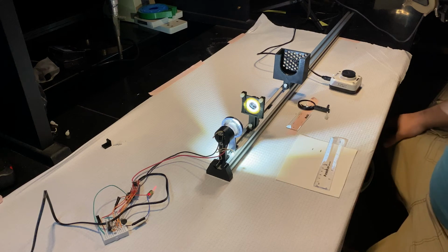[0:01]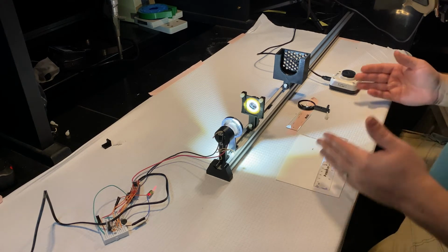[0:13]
Okay, welcome back everyone. We are now going to do lab 4, which is calibrating magnification with digital microscopy. So the first thing that we're going to be doing, same thing we've been doing with the previous labs, is making sure we have our light source and a nice collimating lens to illuminate any sample that we mount relatively close to it nice and evenly.
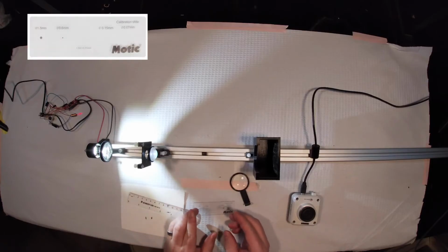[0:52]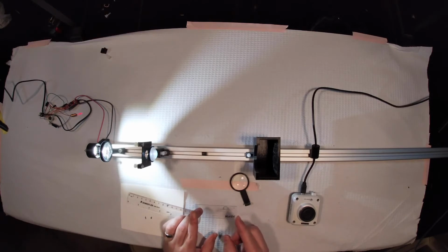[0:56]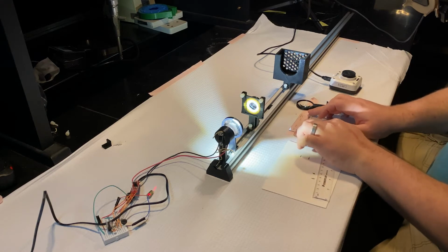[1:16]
We're going to be using the same objective as last time, this nice 20x objective. And for our tube lens, we're going to be using this tube lens labeled 4x. Now, you should have the focal length of that from a previous lab, so be sure to reference that. And we're actually going to be doing away with our trusty ruler for a much more precise slide with very precisely engineered dot sizes on it, so that we're not simply measuring the distance between markings on a piece of paper that I made with my very shaky hands, but actually a very precisely engraved sized spot, and using that to calibrate magnification and also calibrating it digitally.
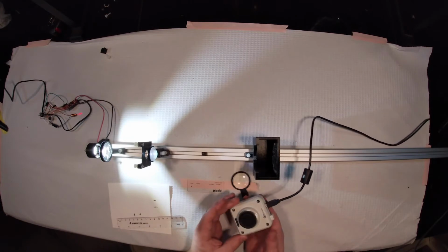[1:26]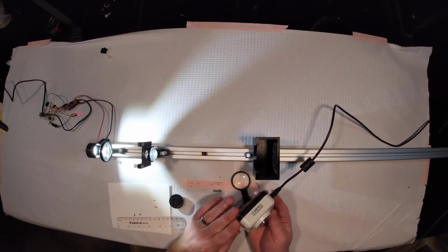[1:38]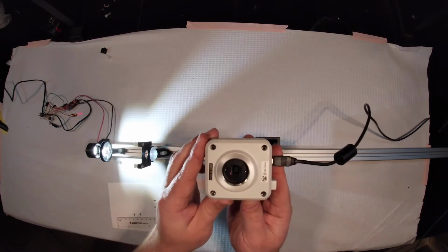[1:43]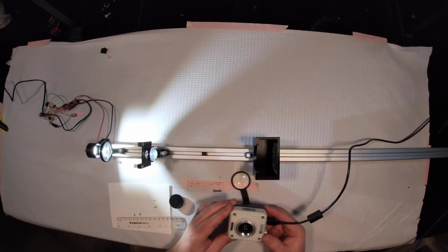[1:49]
So what we have here is a camera that you can mount on your scope. Now, this is probably unlike most cameras that you've seen, because this camera, in fact, has no lens attached to it, right? This is simply an array of pixels. And you might even be able to catch that right in the center. You can see sort of a square array. Now, this camera has 1960 by 1280 pixels, and each pixel is 2.8 microns on each side.
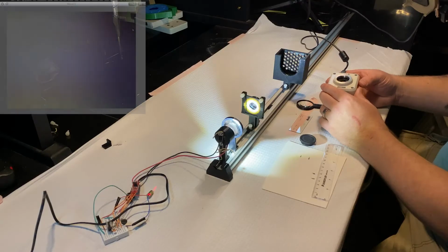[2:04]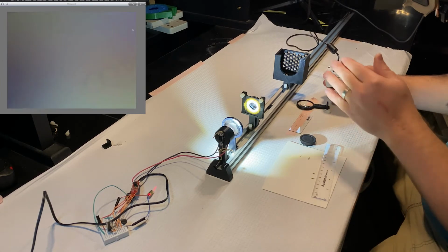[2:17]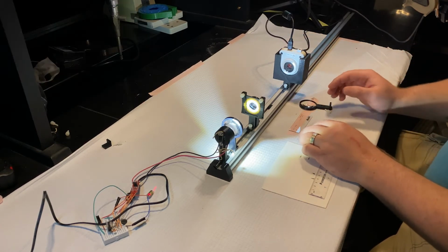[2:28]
And what you're seeing on the feed is nothing but sort of bright spots and dark spots, because again, there is no lens on here, so there is no image being formed. But our microscope is going to serve as our lens. So we're going to go ahead and insert that into our holder. And once we start placing things in our sample plane and making a nice infinity corrected microscope, we should start to be able to see something on our camera. But we'll get back to that in a minute.
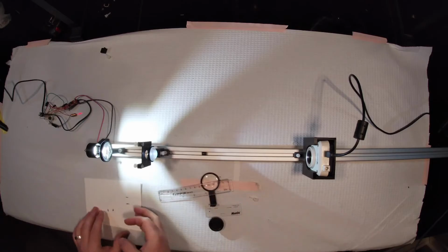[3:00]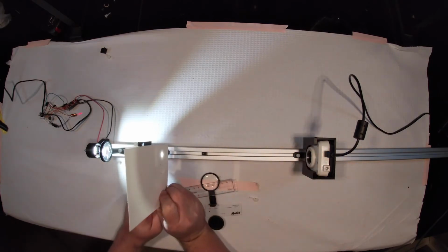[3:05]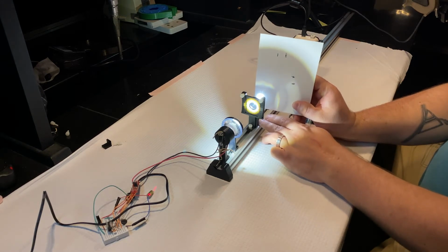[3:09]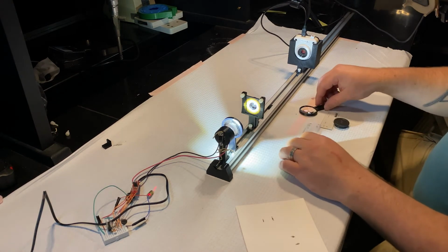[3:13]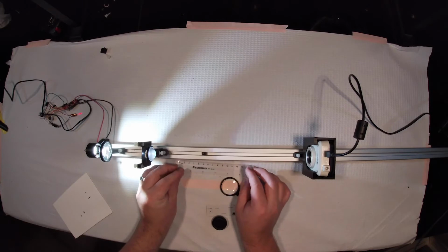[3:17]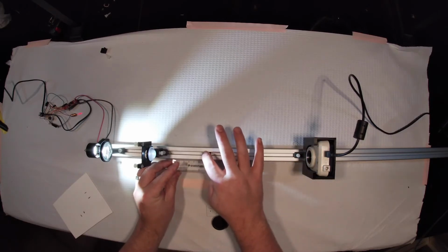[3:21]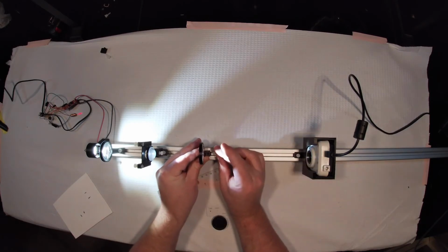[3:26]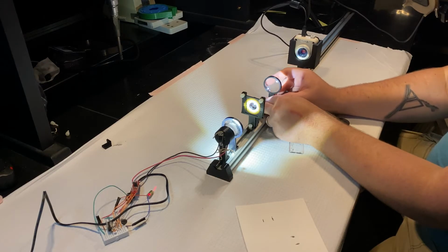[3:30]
So we'll do this exactly the same way that we did in the first part of lab 3. We are going to mount our tube lens one focal length away from the back focal plane of our detection objective. So our detection objective, again, its back focal plane's about there, and it's probably going to have to be a little bit closer to our sample. So we're going to do some quick back of the envelope calculations here. This needs to be about there. So I'll go ahead and screw my tube lens in. Too tight. We'll need to move it around later.
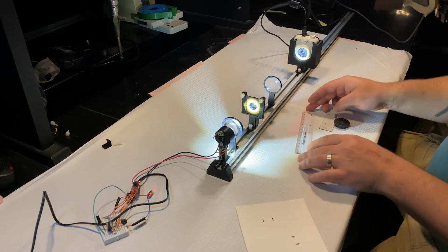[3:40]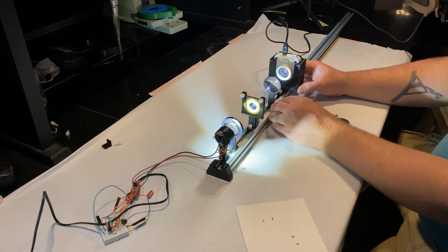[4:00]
And then we know that we should be getting an image one focal length away from our tube lens. So that image plane should be somewhere around there. Now you want to make sure that you have aligned your camera pixels to where you think the image plane is going to be, and not just the front of the camera, because the camera pixels are actually inside of it. Now, let's go ahead and mount our Maddox slide.
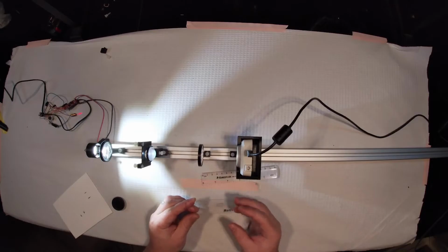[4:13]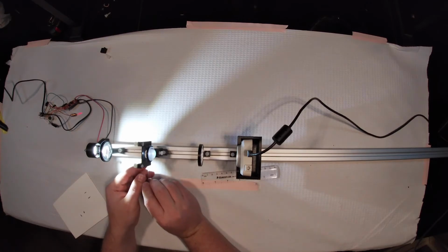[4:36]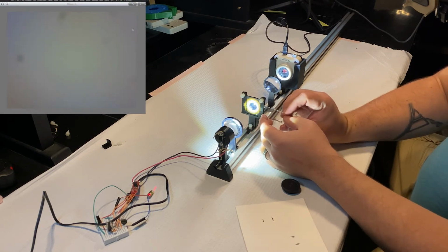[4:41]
Now, there are several different sizes of spots on here, all the way from a diameter of 1.5 millimeters to 0.6 to 0.15 to 0.07. So we're going to need to pick the best one, and without doing any calculations, let's just go for the biggest one right now, and we'll see how that looks. All right, so we're going to mount this guy in the middle of our field of view.
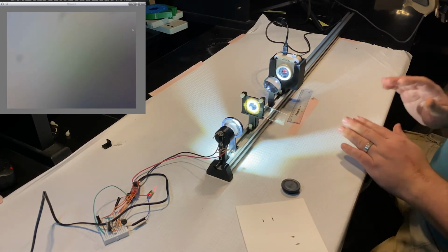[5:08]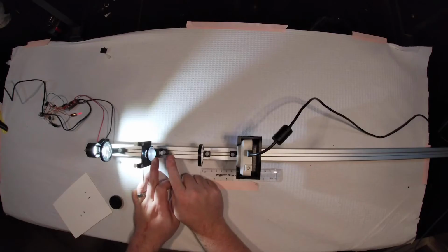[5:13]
And if you look at the camera feed, we're seeing something as I move this around. Move it up, move it down, seeing some black smudge, which is promising. We just haven't quite properly aligned our system yet. I'm just going to leave that there for right now, and we're going to make some adjustments. So we're going to need to make sure, first of all, that our sample is one focal length away from our lens. And actually, I think that I have mounted this backwards.
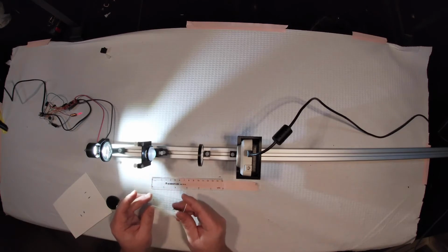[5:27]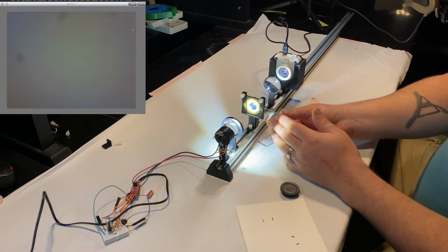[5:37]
Yeah, you want to make sure that you place the etched side closer to the lens. That way you're not looking at light as it passes through the thick slide. So we get that smudge somewhat back into view. Yeah, there we go.
Now, you're dealing with a very small array of pixels. It's only sampling a very small subset of your field of view. That's why I started with the biggest dot, because it's the easiest to find. Very unlikely to skip past it.
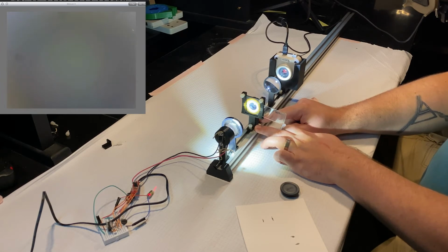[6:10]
Now, I'm going to move my detection objective back and forth a little bit, just to see if I can find a nicer focal plane. Definitely improved on it. You can see these edges, it's looking a little bit sharper. Let's see if we can do a little bit better with that. All right, that's not looking too bad. Oh, yeah, and there we go. Nice crisp edge to our dot.
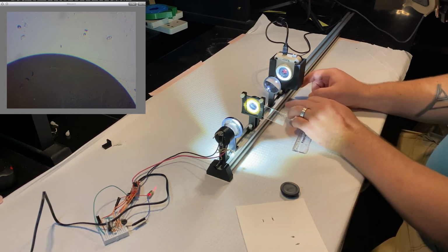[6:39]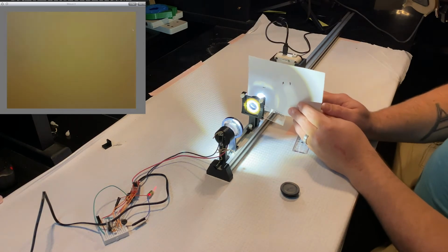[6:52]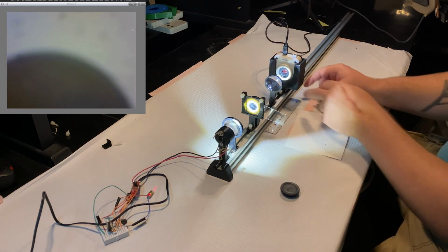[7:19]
Now, I'm also going to move my image plane around a little bit. I'm going to make sure that my tube lens is still the proper distance away from my detection objective. Not quite, because I had to move it back a little bit. So I'm going to need to move my tube lens up a little bit. It's going to throw my image plane out of focus for sure. I'm going to need to move that back a bit as well.
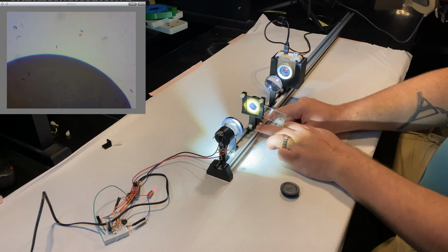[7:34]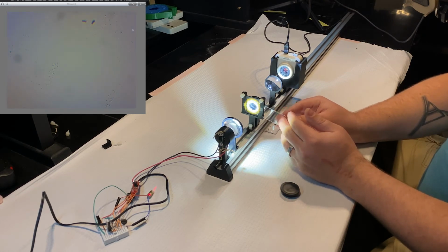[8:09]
And tweak my focal plane a little bit. That's too far. See that even very small movements drastically shift your focal plane. Oh, and I bumped my sample a bit. So I'm right in the middle of the dot right now. So the first thing that we'll notice is that this dot is very large, and I would say that this is probably a bit too large for our field of view, because I can't fit the entire dot in it.
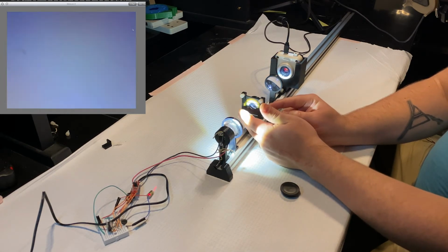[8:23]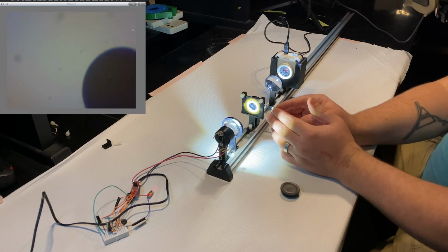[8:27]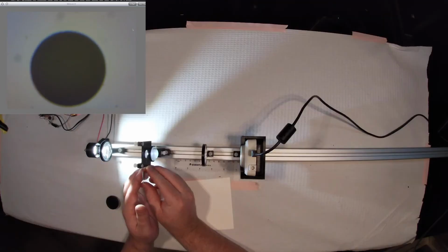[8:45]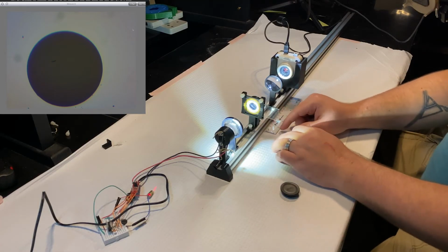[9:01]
So what I'm going to do is, let's go to the next dot size over, see how that looks on our image plane. Well, that doesn't look too bad. Lost it. All right, and I appear to have shifted my focal point ever so slightly, so I'm going to make sure I refocus this so I get the sharpest edge possible. That looks pretty sharp to me. And that seems to be a pretty large dot without completely filling my field of view.
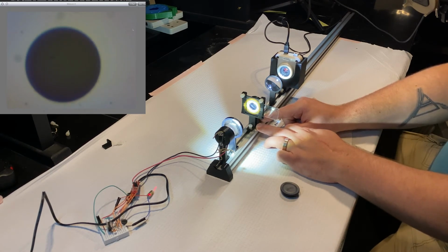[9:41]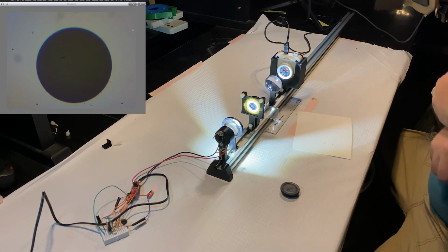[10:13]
I'm going to try to see if I can get it closer to the center. Leave it there. It's pretty close. Now, refocus my image. I'd say that's pretty good for focusing by hand. I'm going to snap an image of this, and I will pass this along to you guys for the calibration.
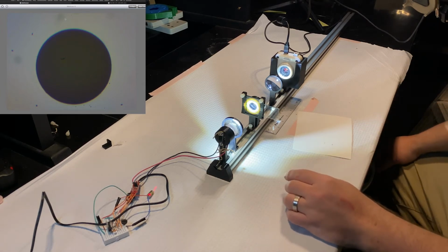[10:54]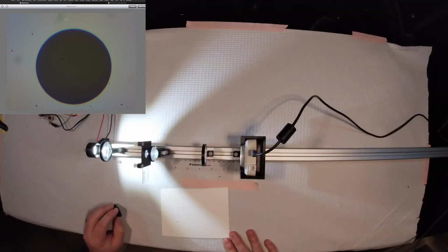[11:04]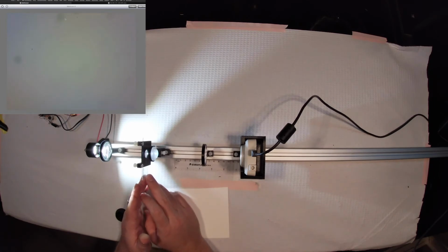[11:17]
All right, so you should now have that image in hand. The next thing that you're going to do is make sure that you have Fiji already downloaded, which you should have from the first lab. And we're going to be doing a very similar thing to what we did in the first lab with your cell phone microscopes, but now with a lot more precision, because instead of a simple printed dot, you can see even at high magnifications, this dot is incredibly precisely printed, or rather etched.
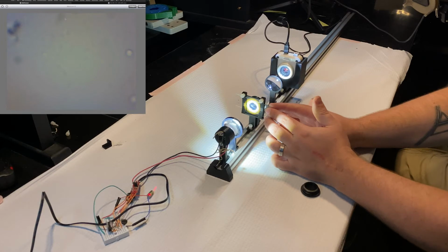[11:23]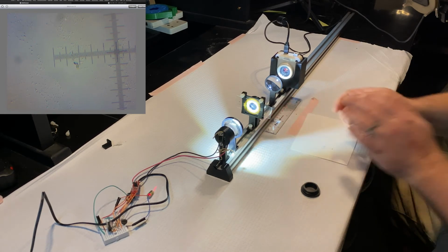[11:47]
So I'll move it around a bit. We can look at some of the smaller dots. Actually, I believe there's a reticle in the middle of this slide. Yep. So these are actually markings that we could use instead. I find the dot to work slightly better than measuring the absolute distances between these. But just to sort of show you what this looks like. So now go ahead, pause the video, and run through the calculations on what your magnification is with this system.
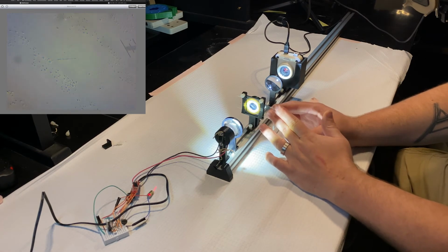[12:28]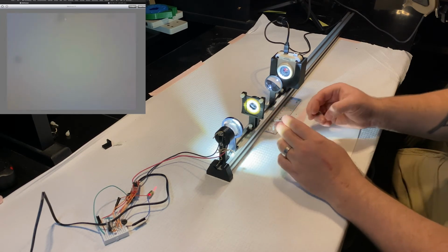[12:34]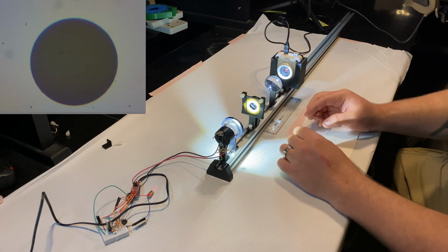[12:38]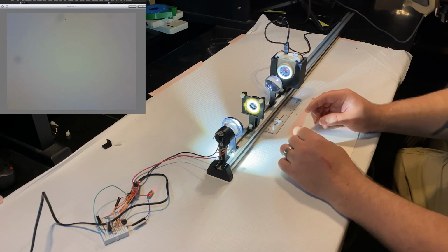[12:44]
Now, be sure to factor in the size of the pixels, which the physical size of them is again 2.8 microns, and there is 1,280 by 960 pixels, and you know how many pixels your circle is going to have taken up, and you know, I don't think I mentioned what the size of that circle that we took was. Well, good thing I thought about it. That is going to be 0.6 millimeters in diameter. So that is the real size of that dot that we took a picture of. So now you should have all of the information you need to calculate what the magnification is. Pause the video, go ahead and do that.
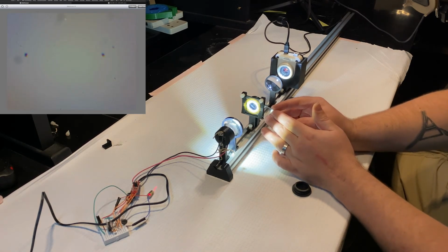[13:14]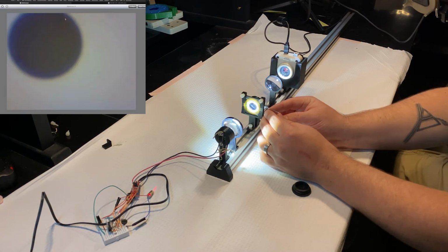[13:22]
All right, hopefully you have already calculated the magnification. For the last exercise, we're going to try to see what happens when we move our tube lens and camera away from our objective and sample. Okay, so just to go ahead and refocus this image so that we get a nice reference point for what it should look like.
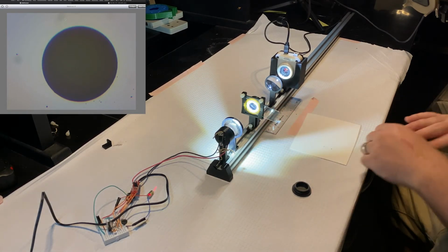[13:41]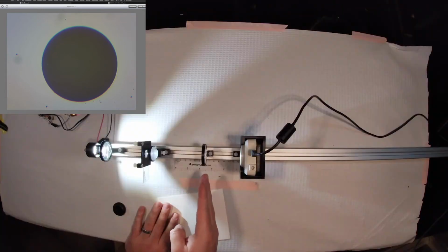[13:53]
So what I'm going to be doing is, I have this mounted now so that my objective lens is one focal length, i.e. 20 millimeters away from my sample. My tube lens is one focal length, so 70 millimeters, plus 20 millimeters away from my objective lens. And my image plane, which is my camera here, is exactly 70 millimeters away from my tube lens.
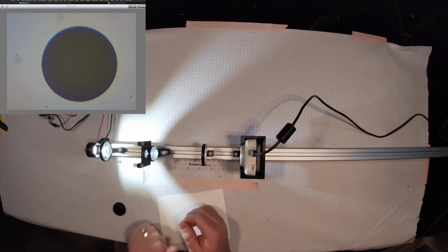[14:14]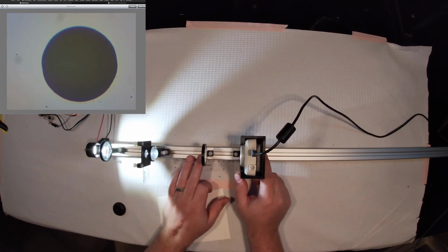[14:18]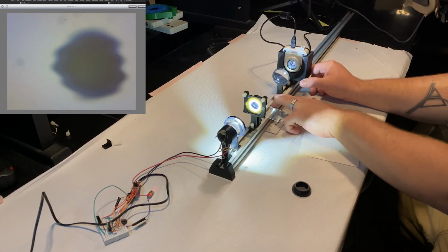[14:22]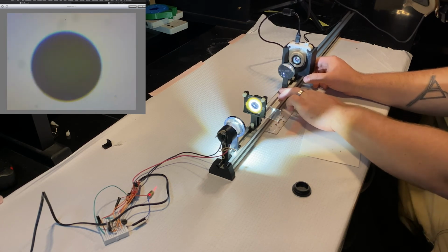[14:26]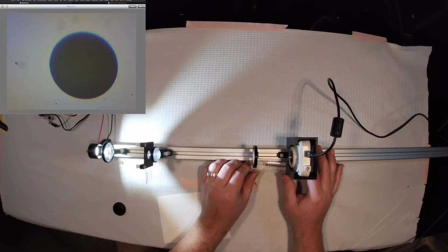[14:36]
What I'm going to do now is increase this distance, the distance between the tube lens and the detection objective, while keeping the distance between my camera and tube lens constant. Now, I'm not going to be able to do this extremely precisely, but I will remeasure it to make sure that I am sitting at about 70 millimeters away.
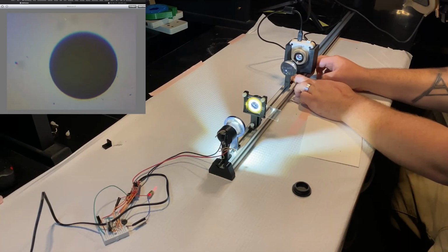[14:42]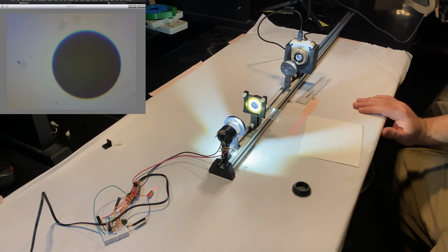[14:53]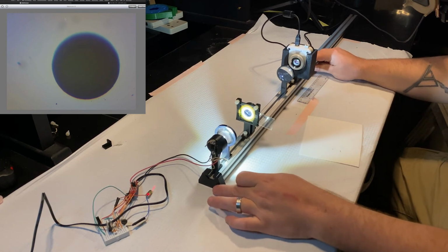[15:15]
So compare the image that you're seeing now on the camera feed to what you were seeing before. Does it look any different? I've focused it about as best as I can. You can see that as I move my camera plane a little bit further, one side of it will come into a little bit better focus. As I do it again, I see the other side. Let's make this a little bit more extreme. Let's really crank up this distance.
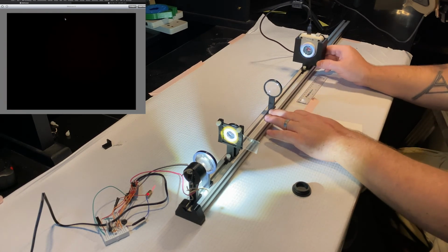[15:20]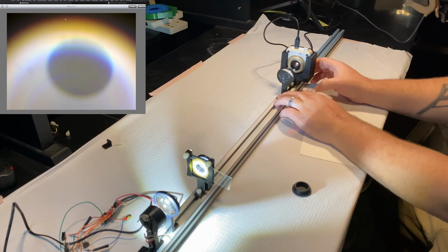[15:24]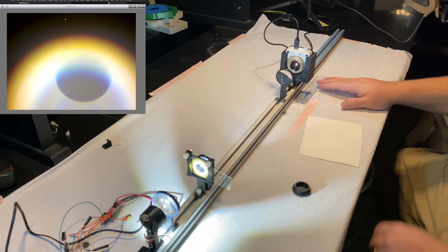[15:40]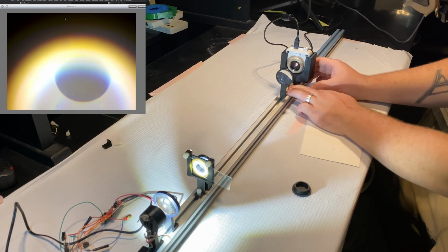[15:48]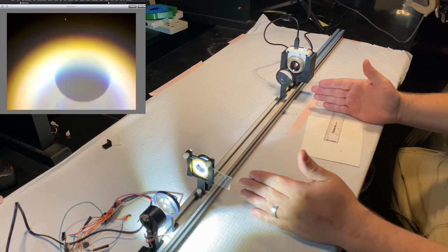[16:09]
All right. So, what I've done here is I have mounted this about still 70 millimeters away from my tube lens. And you can see that the dot is still there, but you're seeing something very different around the edges of your field of view. Something that's looking very yellow and appears to be sort of blocking out a lot of the upper part of this sphere. So that should tell you something about how the distance affects the field of view.
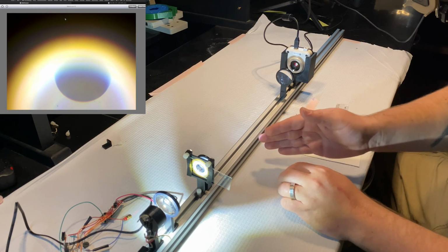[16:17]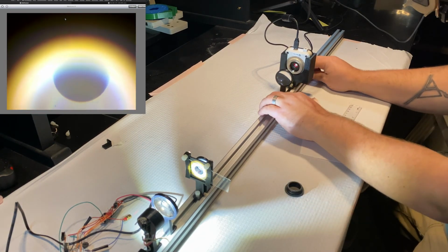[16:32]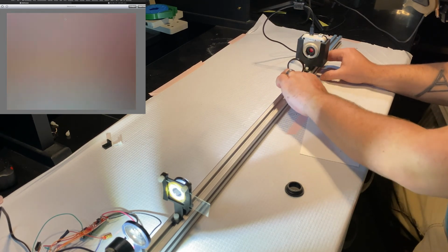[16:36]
Now, does that sphere look any more or less magnified to when I had it mounted, we'll say properly, with an infinity corrected system, where this was one focal length plus the focal length of the objective away from the tube lens? We can go a little bit even farther. We've got a little bit more room to play with on this rail, so let's go ahead and do that. Let's see what happens.
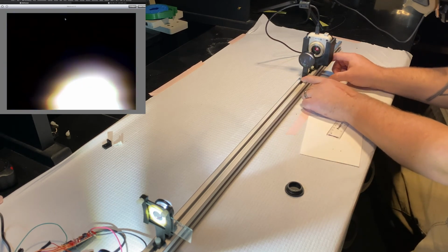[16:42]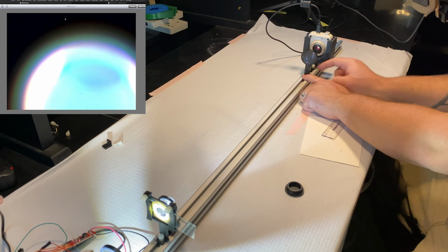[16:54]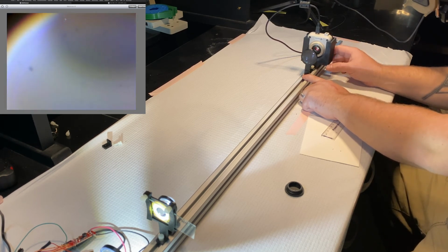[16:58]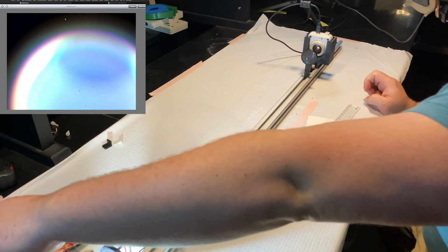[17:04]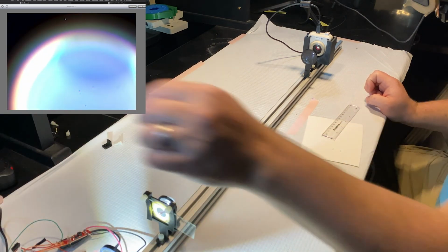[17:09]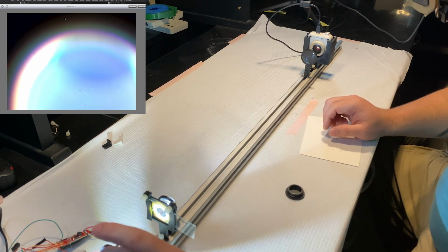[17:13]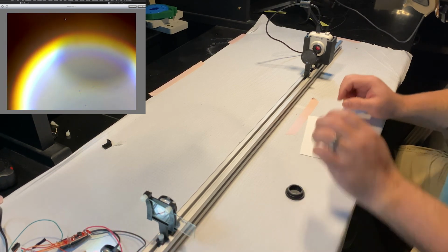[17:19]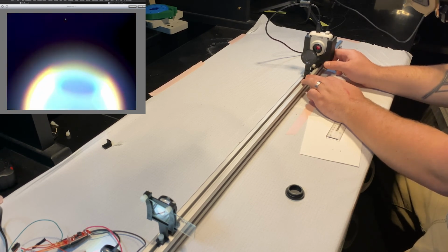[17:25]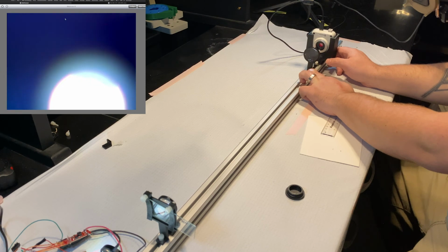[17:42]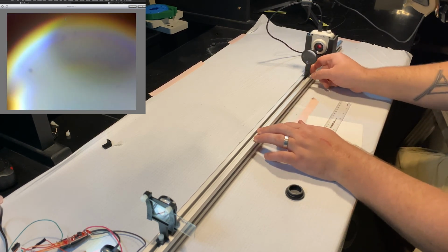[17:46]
Well, now I'd say we're not seeing a whole lot of anything. You can almost make out the circle there. See if we can turn our illumination intensity down a bit. Yeah, really degrading the quality of my image there. There's really no good place where I can mount my image plane to show the circle at even its best, even a moderate amount of focusing. Additionally, I'm sort of seeing this vignetting effect, where if I mount it even a little bit farther, you can see it tends to focus down to a point.
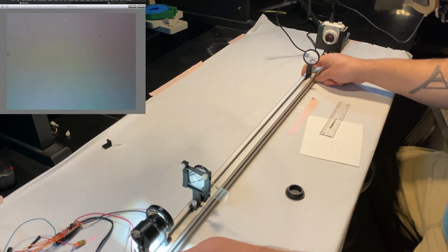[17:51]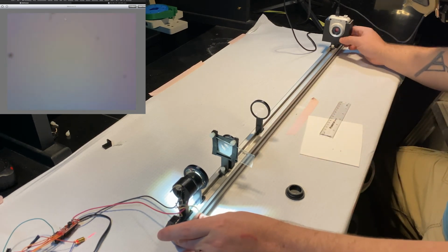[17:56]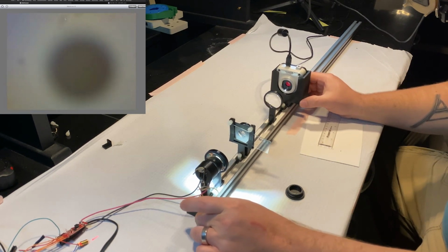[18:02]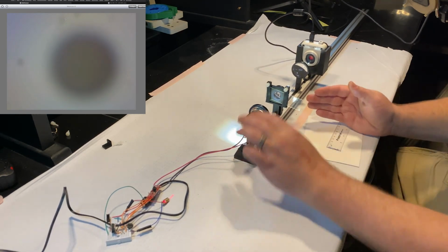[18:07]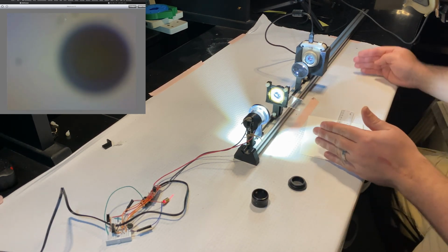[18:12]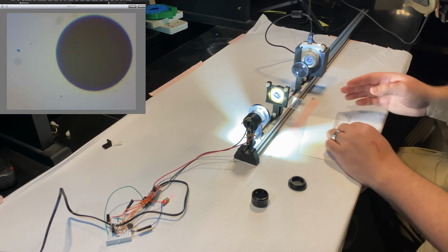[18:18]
So that should tell you something about the best way to use an infinity corrected system, right? Even though the light is collimated in between the objective lens and the tube lens, you don't have an infinite distance to sort of play with between these two. It just means that if you put something that doesn't refract light, like a flat plane of glass, you won't strongly shift the focal point.
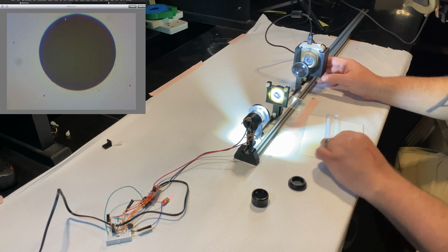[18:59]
This is really useful for putting in filters and doing some more clever things with light that we will touch on in the future. But for an infinity corrected system, you do want to make sure that you mount these guys an appropriate distance apart so that you maximize your field of view and you minimize aberrations, because that will, again, affect not only the quality of the image, but also the quantifiability of the image.
Right, so that concludes Lab 4. Next, we will be taking everything that we've learned up until this point and finally getting into building a Kohler microscope, where we have sort of the optimal even illumination and maximum resolution for a transmitted light microscope.